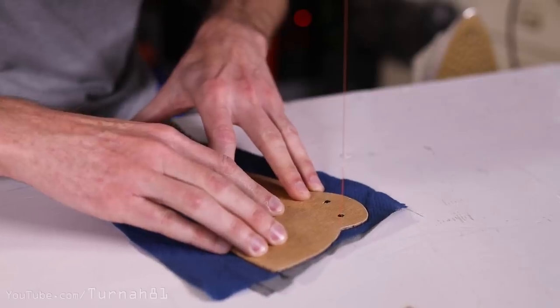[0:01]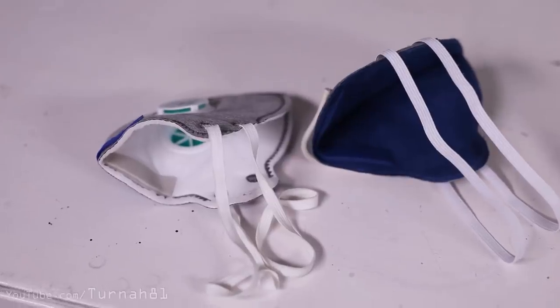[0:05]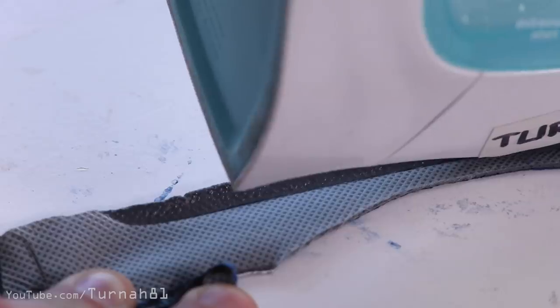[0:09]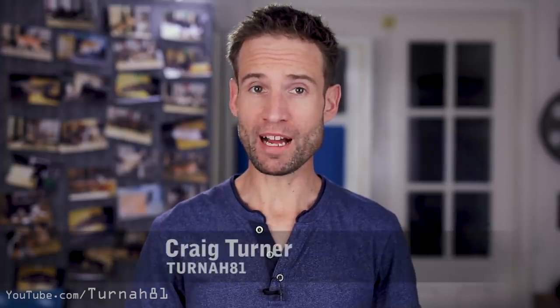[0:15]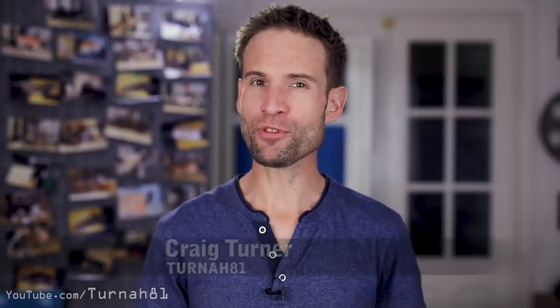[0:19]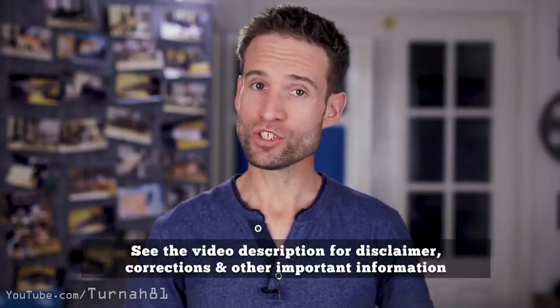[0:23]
In today's video, we're going to make a close equivalent to an N95 mask with very common household materials, without the need for sewing, vacuum cleaner bags, cotton, or wearing citrus fruit on your face. So, for my regular viewers, I've put some of my other planned videos on hold. This video is a little bit more serious, but I thought it was good information and wanted to get it out as quickly as possible. So less messing around than usual, maybe.
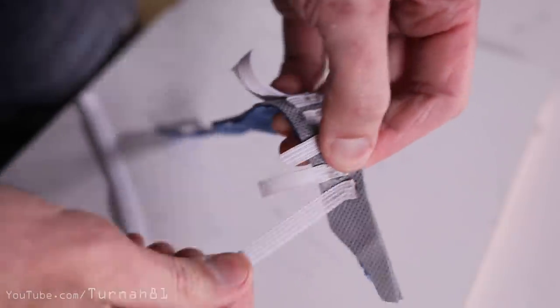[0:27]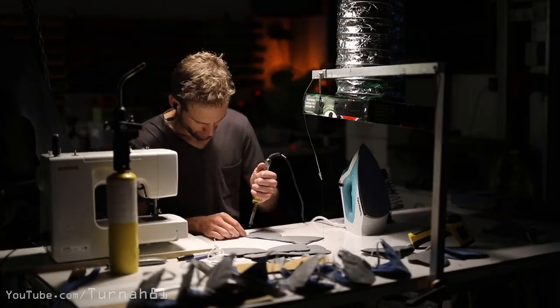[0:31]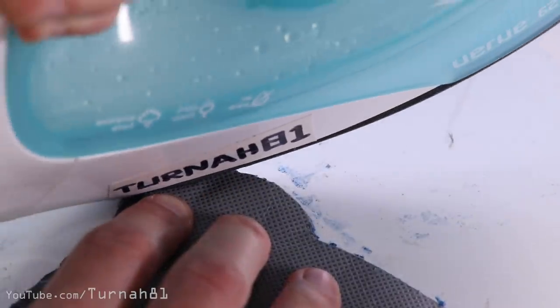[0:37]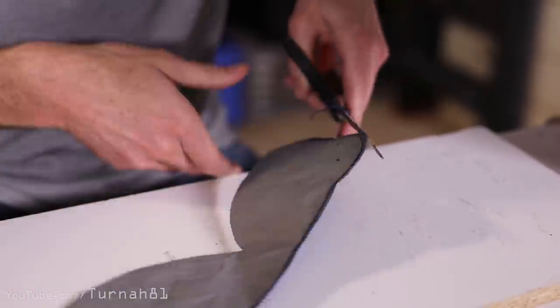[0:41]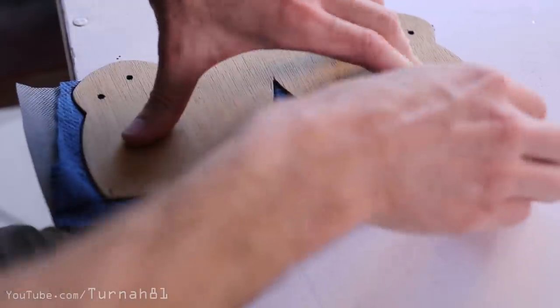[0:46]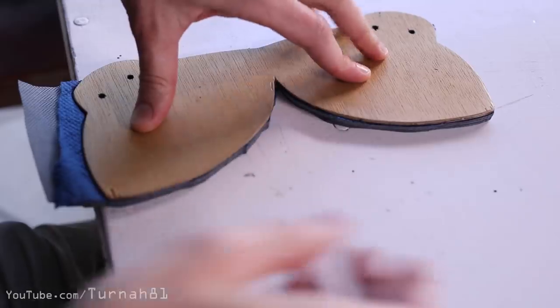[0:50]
Now, after 2 weeks and countless hours in the shed, plus many failed tests, I've finally worked out a pretty good recipe so anyone can make a close equivalent to an N95 mask, which at a minimum could be created with just an iron and a pair of scissors in about 10 minutes. But with a few extra tools, these can also be batch made quite quickly. Best of all is the materials you probably have in abundance in your home right now.
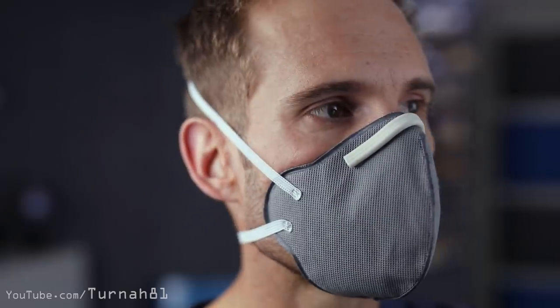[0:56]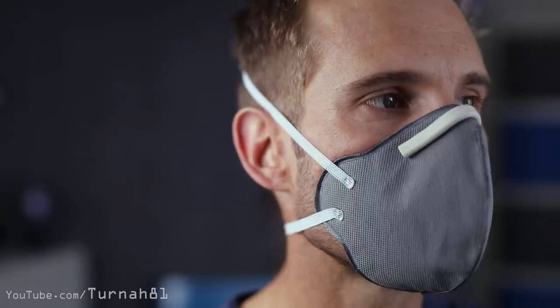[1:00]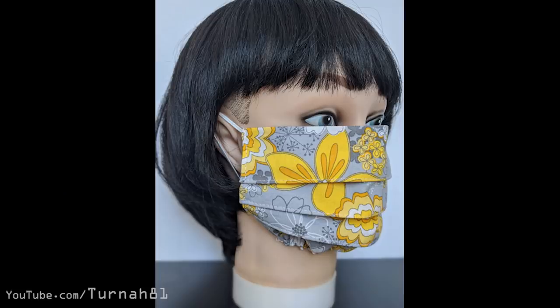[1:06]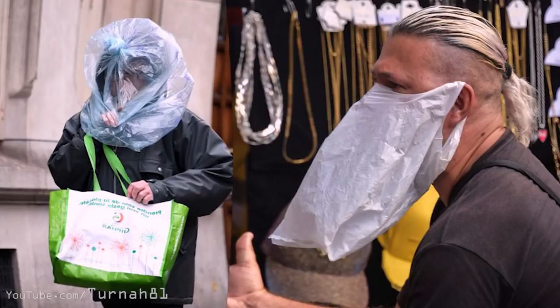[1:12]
Obviously, a proper tested N95 or P2 respirator is always the best choice, but if you can't get one, this could be a close match in filtration, great fitment, yet can be made easily. Personally, I would definitely wear this rather than a cotton mask with sewing holes in it and edge leaks, even over a surgical mask, but it's probably not as good as an airtight plastic bag on your head. Yeah, CO2 is going to make your problems fade away.
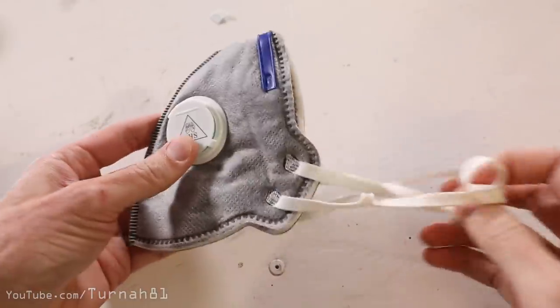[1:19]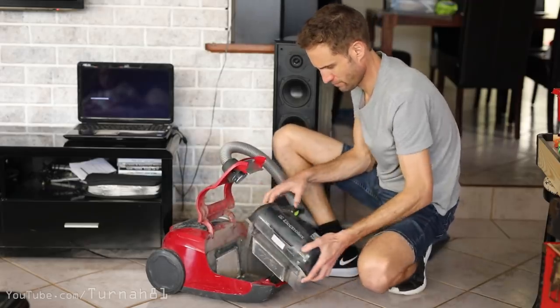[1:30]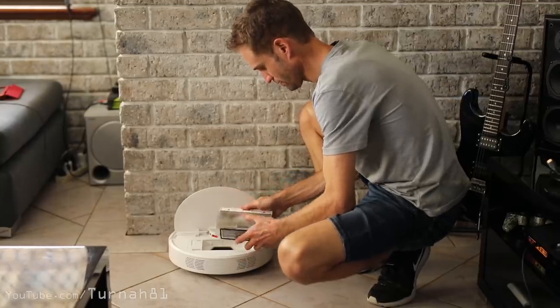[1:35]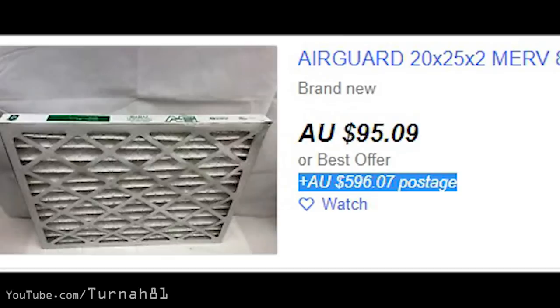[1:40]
Maybe like yourself, I did a bit of research early on as to what some good filtration alternatives are to N95 and P2 respirators. It seems that vacuum bags came up a lot. I went to investigate this option. However, it turns out in all three of our vacuum cleaner devices that it's not 1990. Then there's the furnace filter option, which was a bargain at $500 postage. But in all seriousness, these alternatives could be good ideas, but there's still the fundamental problem with these, which is supply. Even if they're accessible now, demand suddenly goes through the roof, and then they're just as hard to get as an actual N95 mask.
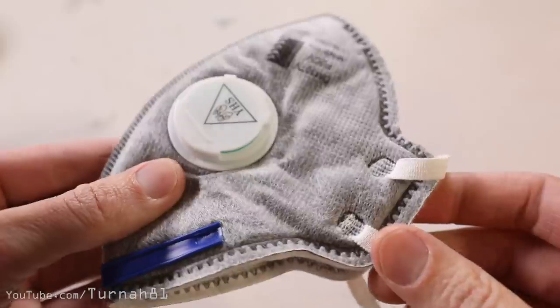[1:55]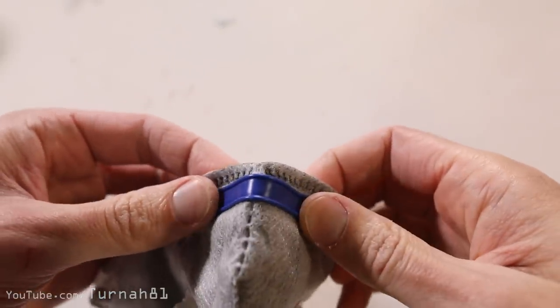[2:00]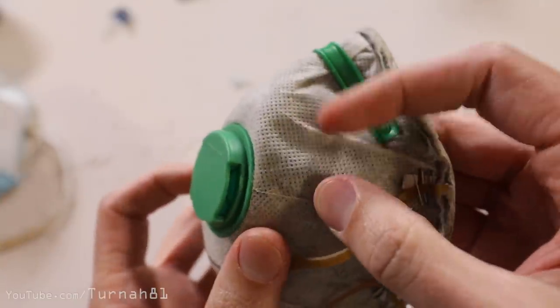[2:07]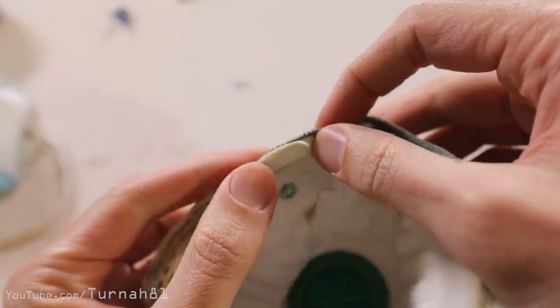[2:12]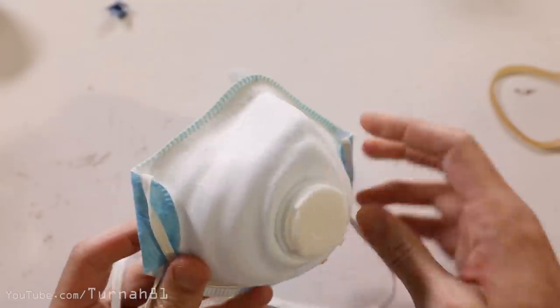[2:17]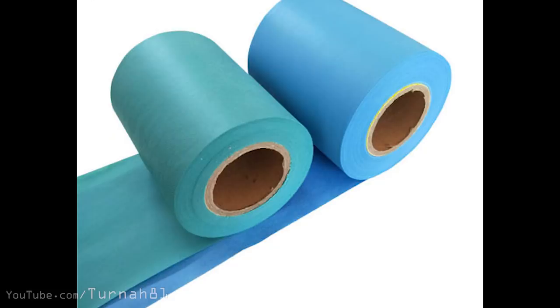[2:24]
I thought a good approach to this would be, rather than improvising a mask with alternative materials, maybe attempt to replicate one as close as possible while making the process accessible to everyone. So, my next move was to have a good look at an actual N95 mask. Luckily, I have a good variety of used ones knocking around in the shed. Looking at these and doing some research online, almost all masks are made from non-woven polypropylene, which has great air and water filtering properties. It's not a popular textile in the clothing industry, but the good news is it's extremely popular in almost everything else.
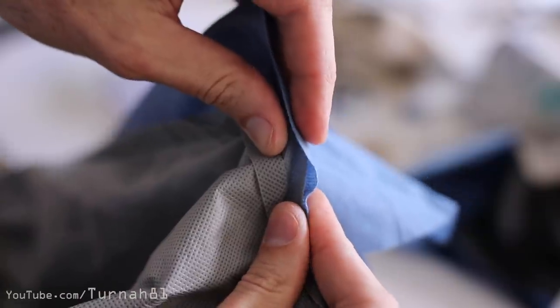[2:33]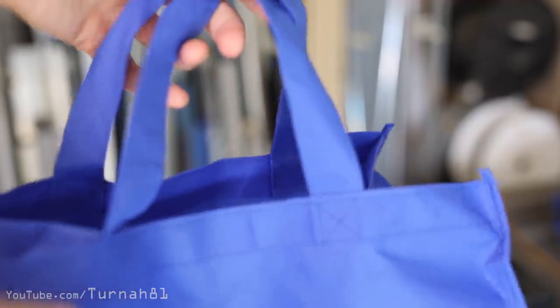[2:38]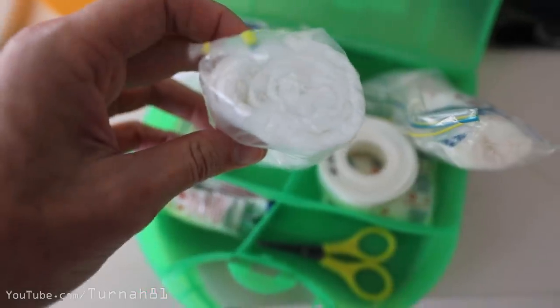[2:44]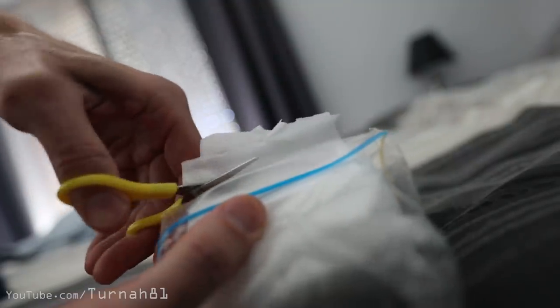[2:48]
It's pretty easily identifiable by the matrix of dots on it and can be found in varying thicknesses in everything from reusable shopping bags to cheap aprons, disposable painting overalls, suit covers, and I even managed to find some lightweight material in gauze in the first aid kit. So I grabbed a bunch of different samples.
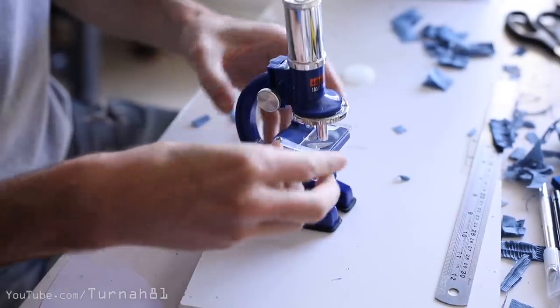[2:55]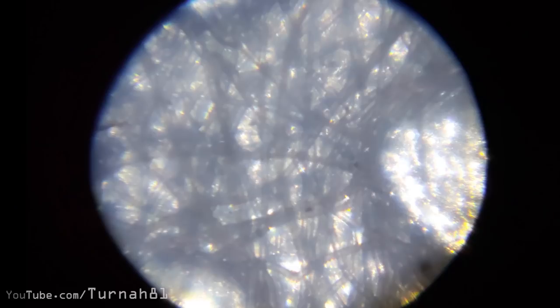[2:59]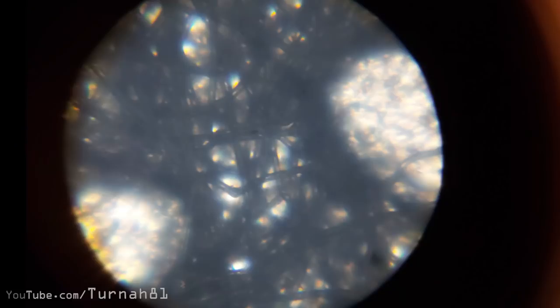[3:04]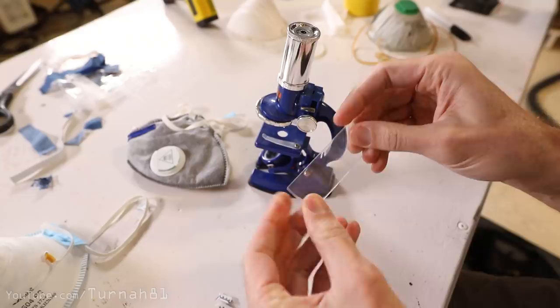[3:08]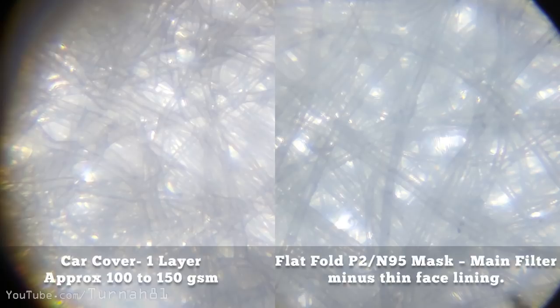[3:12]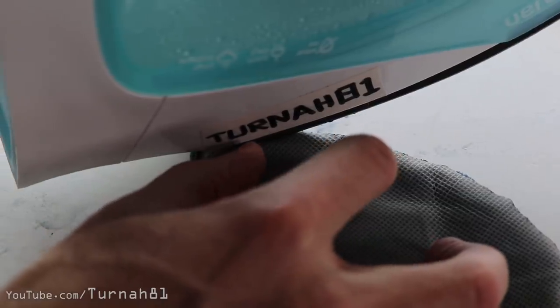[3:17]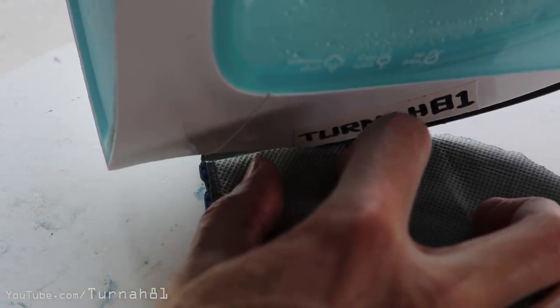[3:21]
First, I was concerned the dots themselves may be a passage for air, but in checking it out on my son's $10 microscope, surprisingly, I was able to get a really good idea of the structure. Sorry, these shots aren't the best and just taken on my phone, but it turns out the dots are pressed and sealed, making them look translucent. I then dissected the layers of the masks I had on hand, and comparing the masks to the non-woven material, it appears to have the exact same fiber size, even with similar air gaps on some. But the other aspect that makes this material really great for this purpose is that it can be plastic welded, so there are no stitch holes.
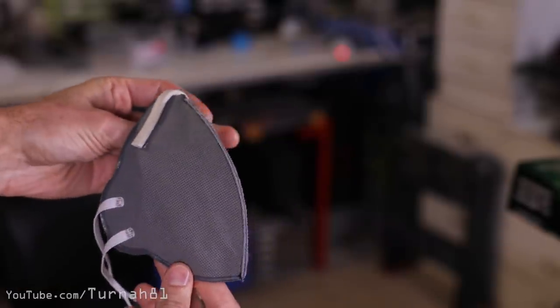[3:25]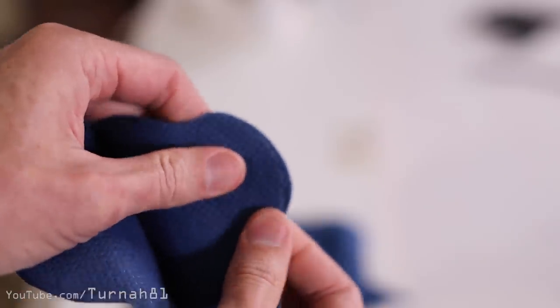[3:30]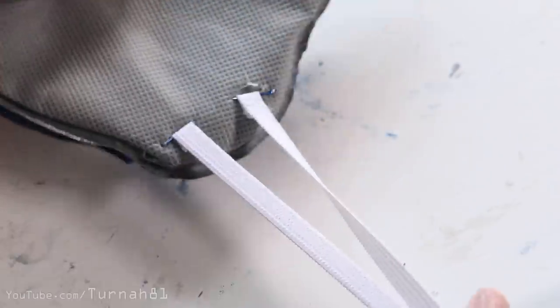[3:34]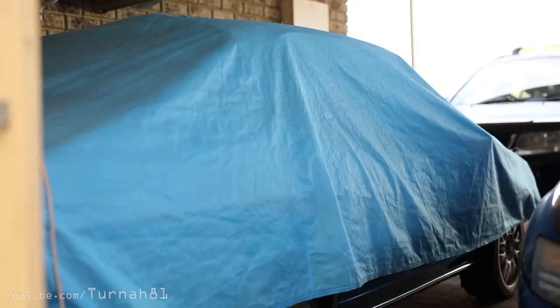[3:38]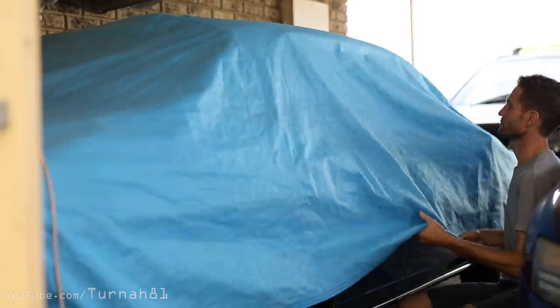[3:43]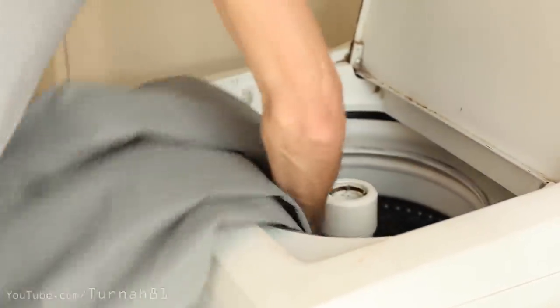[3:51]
So what we'll be doing is making a flat fold style mask using multiple layers of material to get a nice deep diffusion. With a few refinements I've done to allow different elastic strap options, as well as some changes to the shape so you don't look like a duck. The largest, most economical source of material I found in the house was my car cover, but if you're familiar with my other videos, you'll know that this is soaked in cat piss, so I picked up a new one from the shop. Now the first thing is to wash and disinfect our material.
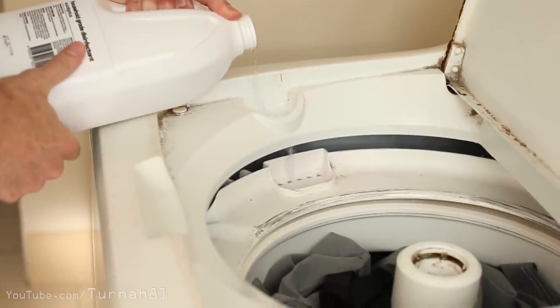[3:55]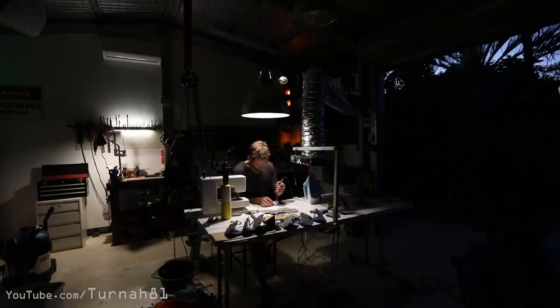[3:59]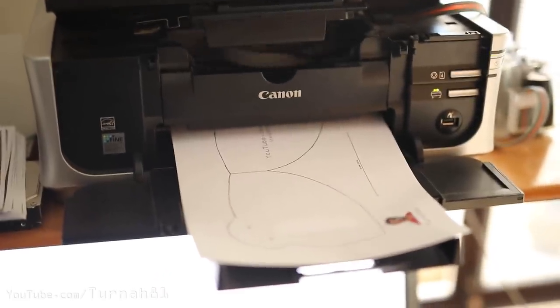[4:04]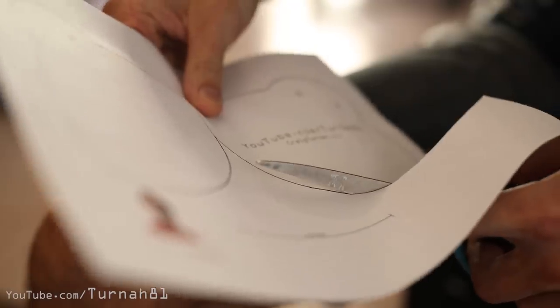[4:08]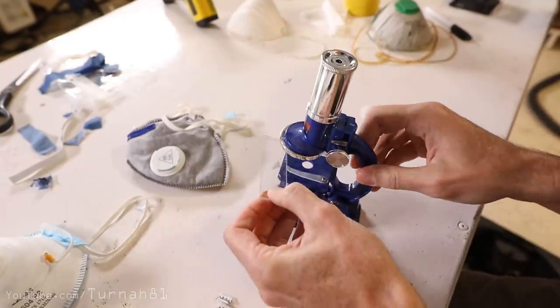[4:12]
As a note though, if you're making masks for other people, unlike what you might see in this video, the whole process will have to be hygienic, and obviously don't make masks for others if you're sick. Now, you're going to want to print out the template. I've put this on my website, and I've put a link in the description. I've done a lot of experimenting with different layers and combinations of different densities.
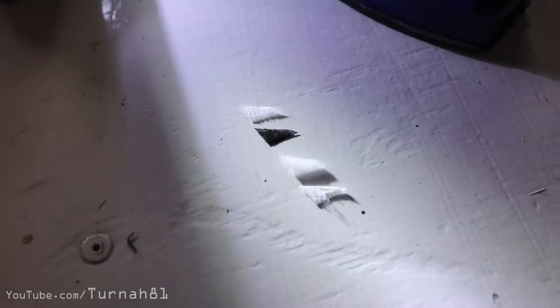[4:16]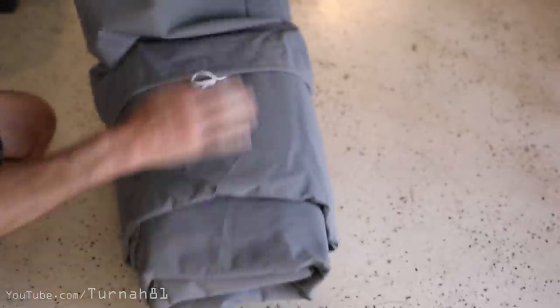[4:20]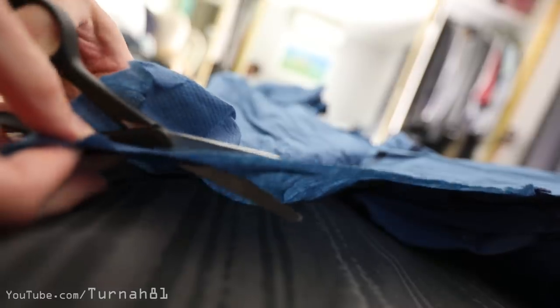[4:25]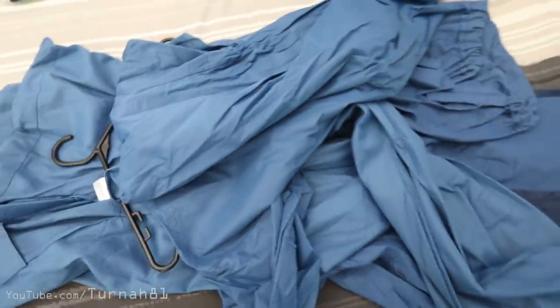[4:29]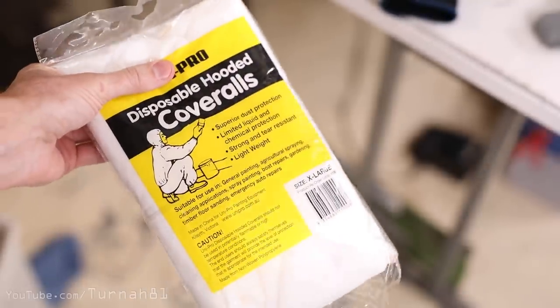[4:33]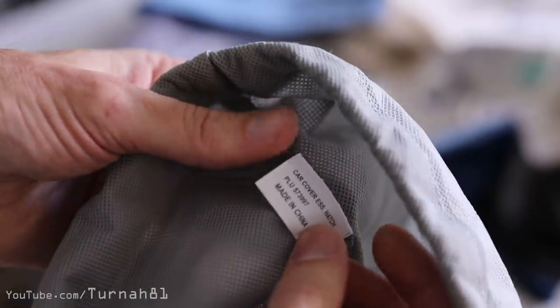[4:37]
Of the non-woven polypropylene I had on hand, I found it was best to use 3 to 4 layers of the car cover, which is around 100 GSM per layer, and then one layer of a surgical gown, which is about 50 GSM. I get that surgical gowns aren't easily available, but they are a similar weight to disposable painting overalls. As a loose guide, based on my research, car covers are about 100 to 150 grams per square meter,
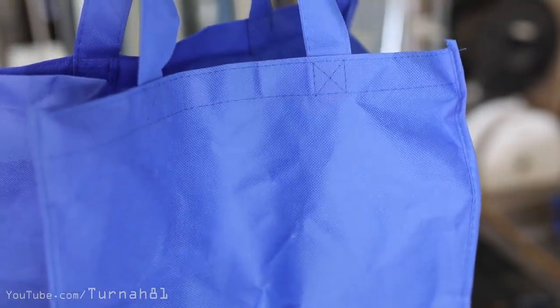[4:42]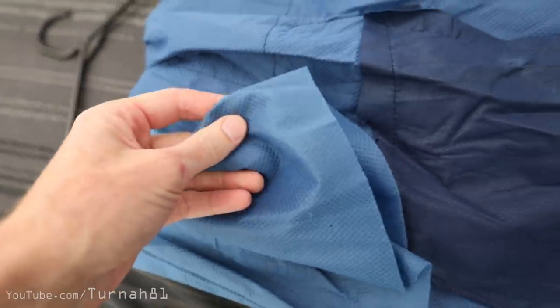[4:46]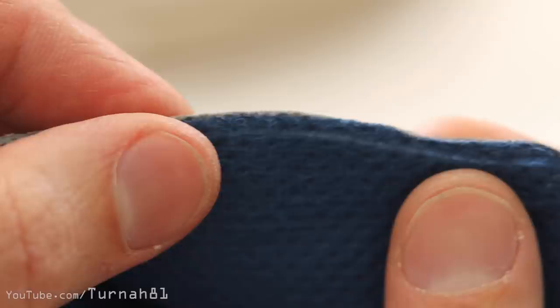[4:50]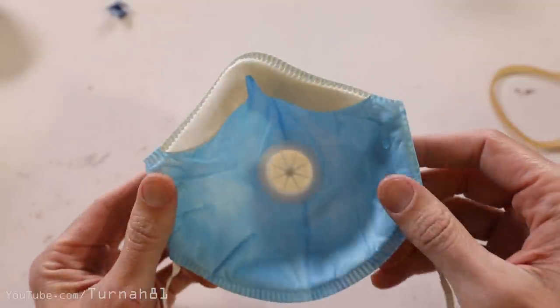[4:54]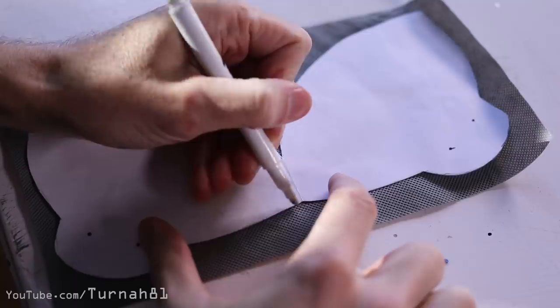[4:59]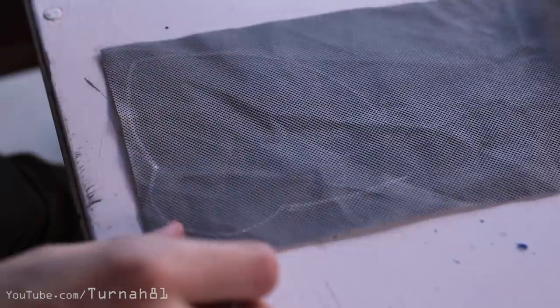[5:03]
shopping bags are 80 to 100 GSM, disposable painting overalls and surgical gowns are a bit lighter at about 30 to 50 GSM. I'm going for a lighter layer to go against your face, which is more comfortable but not totally necessary. However, it probably does provide a better seal against your face. So if you're just making the one mask, you can use a template to trace it onto each of the layers and then cut them out with scissors.
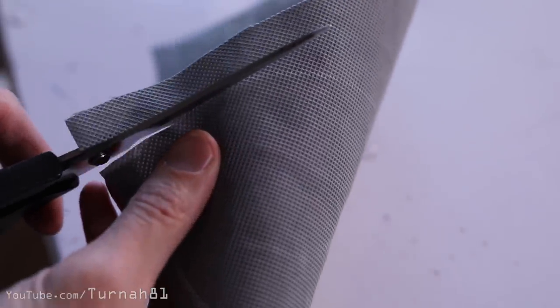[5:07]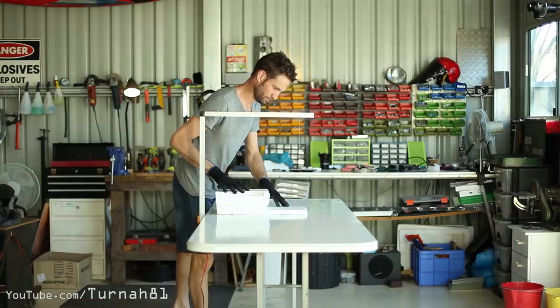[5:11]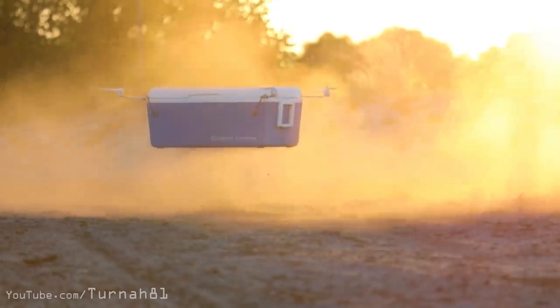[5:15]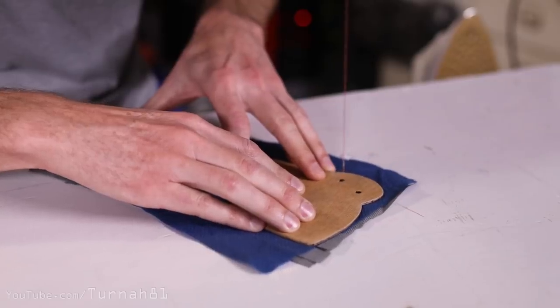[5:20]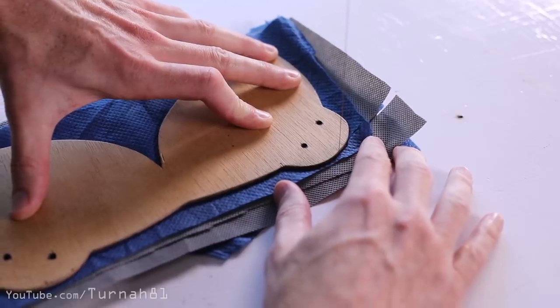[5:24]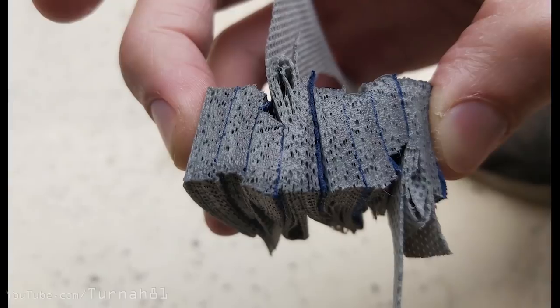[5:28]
I was trying to work out a way to cut more masks at a time to make it more time efficient, and if you remember the hot wire foam cutter that I made to cut material for the cooler drone video, I set this up to see if it would work, and it turns out it does an absolutely amazing job at cutting this stuff. And it's fun. Experimenting with how many layers I could do at once, I pretty much got to the limit of how many I could stack in a pile.
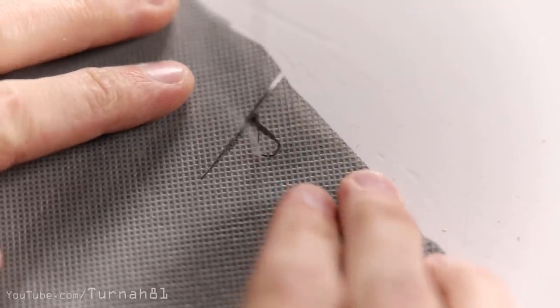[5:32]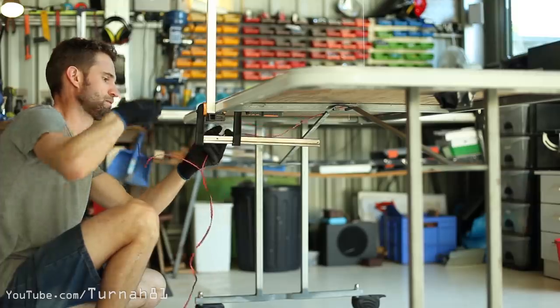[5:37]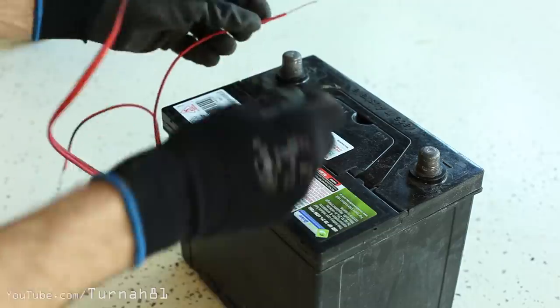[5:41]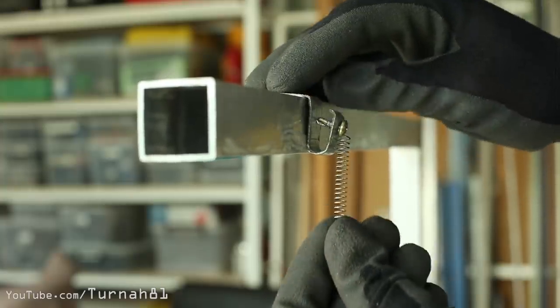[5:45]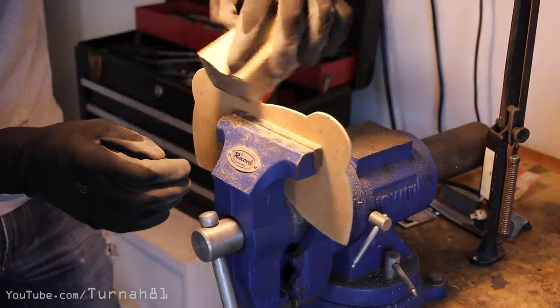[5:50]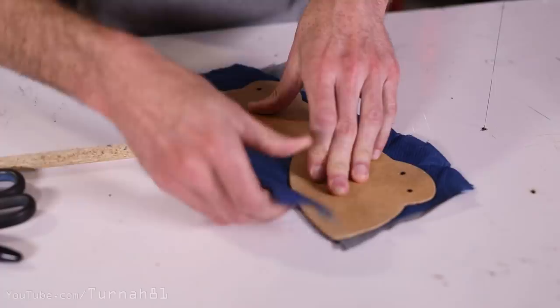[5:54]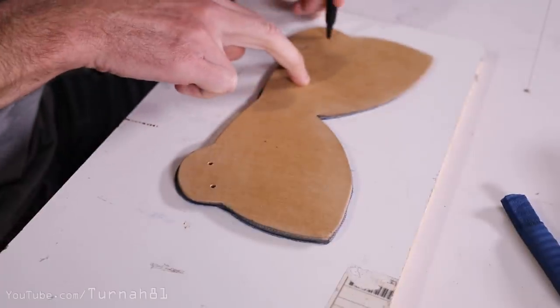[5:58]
So if you're looking at cutting lots of masks, or even just want to have fun with it, it's definitely worth making one. I've actually made another video on how to build one like this. It costs about $30 in parts, plus an old car battery and table, and about 30 minutes to put together. Additionally, to make it easier to cut more in the future, I traced and then cut out a wood template so I can run the hot wire along its edge. After you've cut the basic mask shape, use your template to also mark the elastic holes in the top layer.
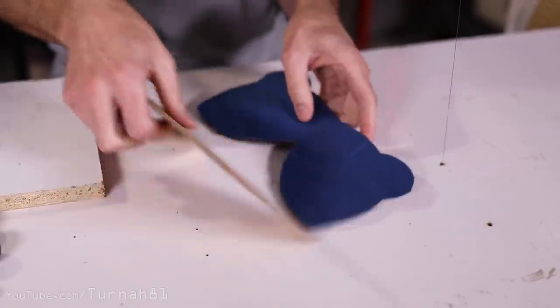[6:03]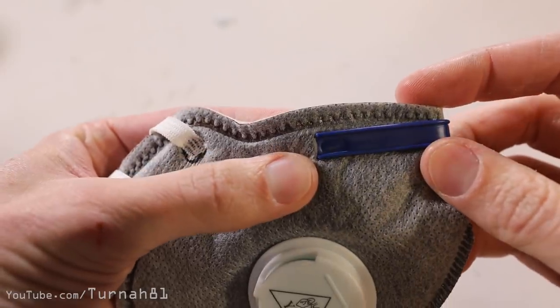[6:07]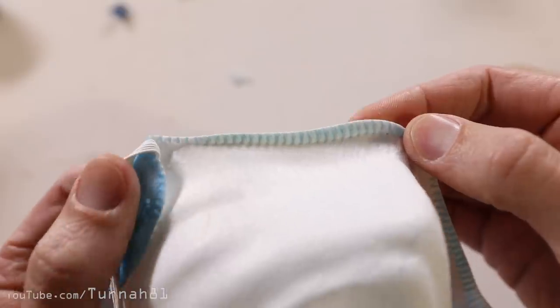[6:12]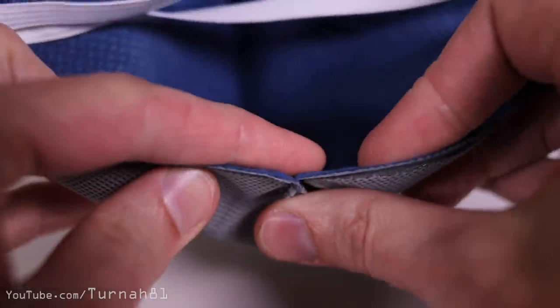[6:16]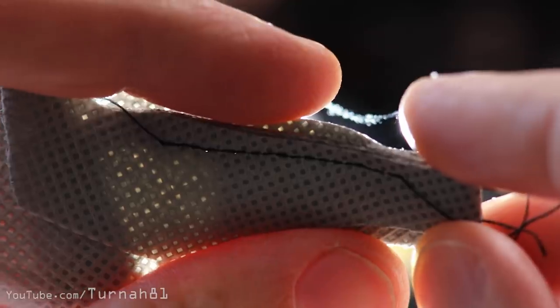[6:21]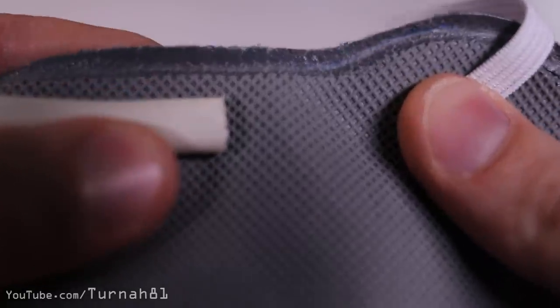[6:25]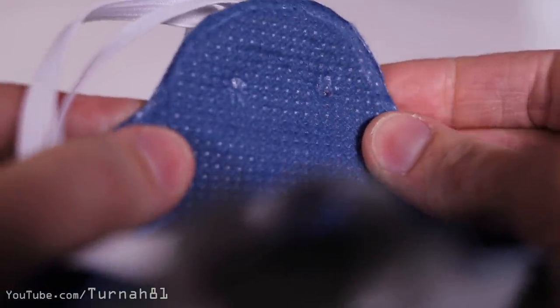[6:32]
Now we are going to weld together all of these filter elements around the edge. Proper N95 masks are made using an ultrasonic welder. None of us have that, obviously, so I managed to work out a technique with an iron. When done right, this is beneficial over sewing, partly because you don't need a sewing machine, but also because sewing introduces perforations to the material, which can leak air. Also because when dealing with this many filter elements, it's important to seal around the edges thoroughly so air travels through every filter element and doesn't take a shortcut through the edges and the seams.
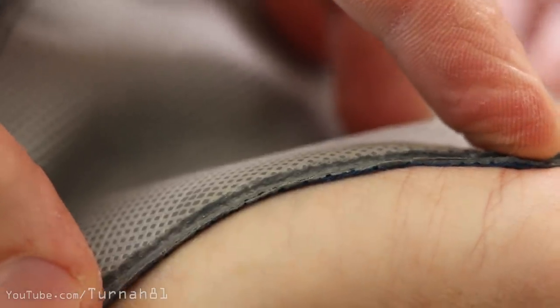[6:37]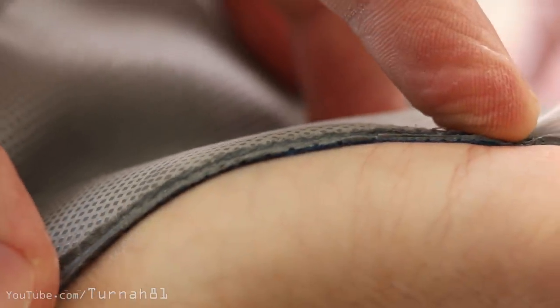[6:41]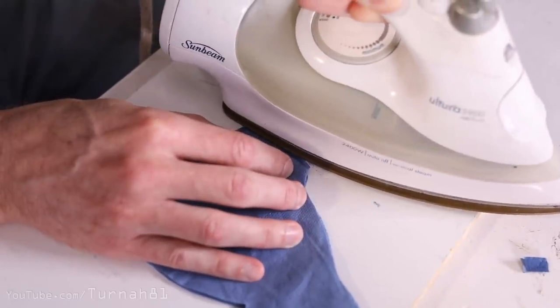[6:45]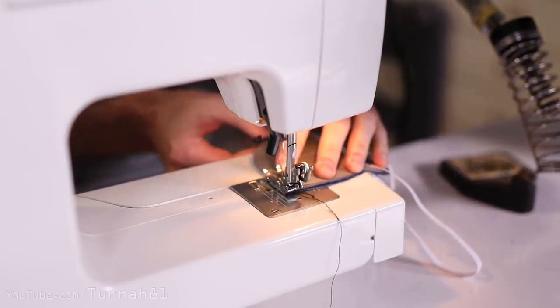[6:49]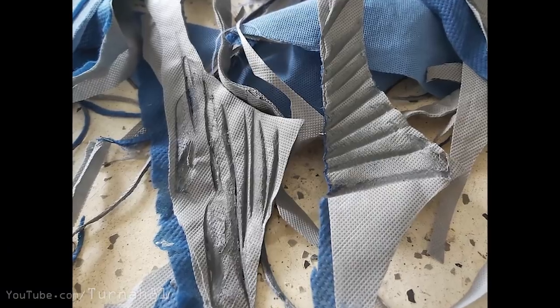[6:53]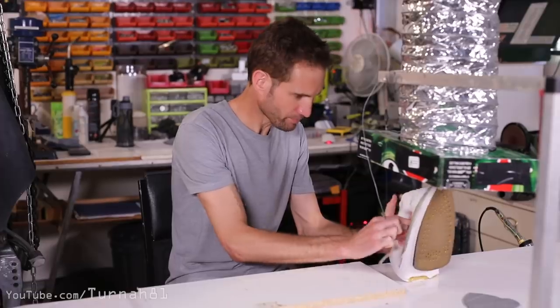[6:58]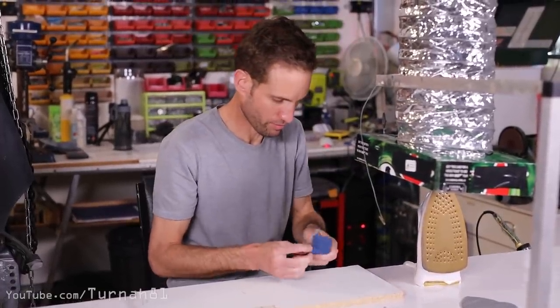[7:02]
Plus, doing it this way seals it nice and flat against your face without any little bits of cotton stitches messing stuff up. Having said that though, if you do have trouble with this next part of the process, you can sew it and you'll still end up with a better mask than if you're using woven material like cotton. I tried so many techniques to get this to work, I almost gave up a few times. I'm not gonna lie, it's not the easiest to learn, but once you nail it, it works awesome.
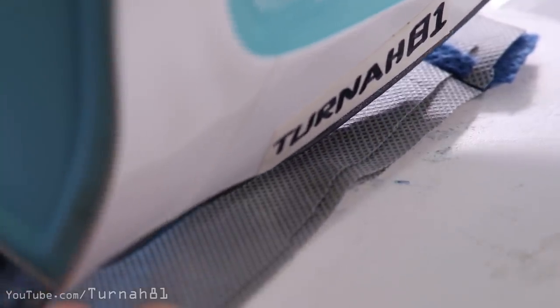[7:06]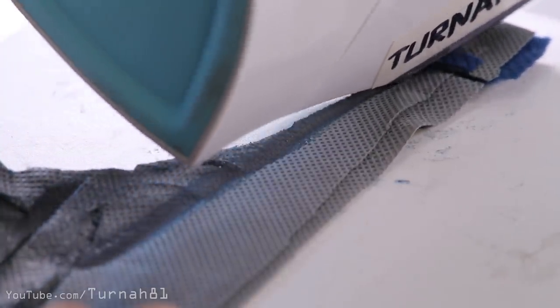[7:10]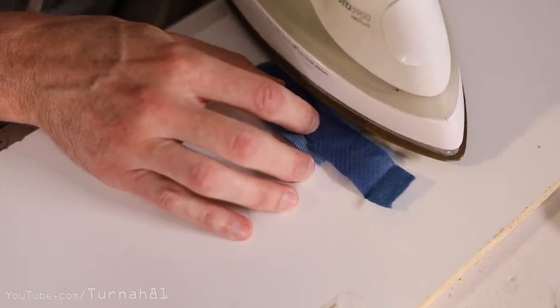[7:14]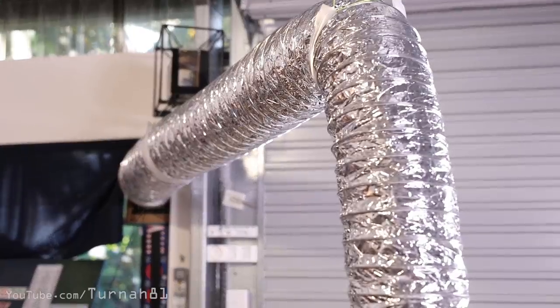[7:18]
Before doing it on a mask, get pieces of scrap material stacked in the same way as your mask and do a bunch of test runs with your iron. Just before you do that though, this can produce a fair few plastic fumes, which you probably don't want to be breathing, so do it in a well ventilated space.
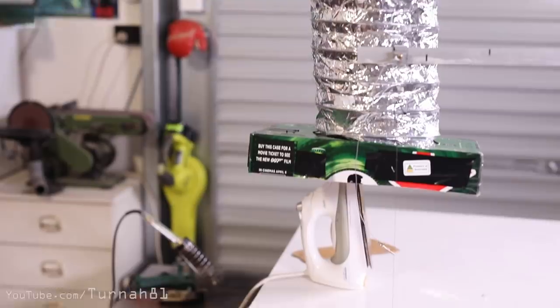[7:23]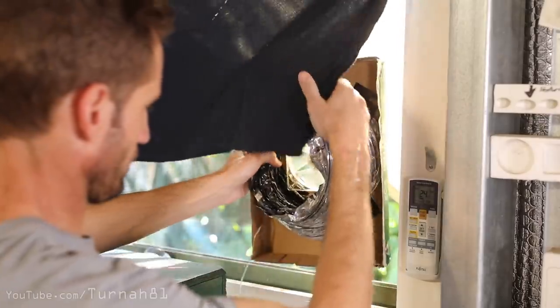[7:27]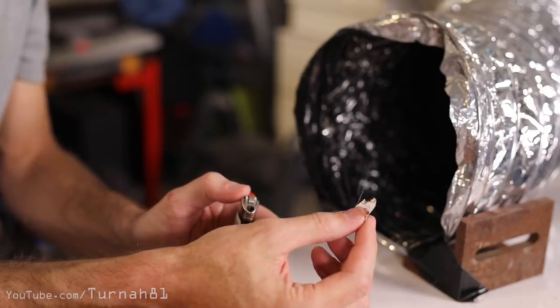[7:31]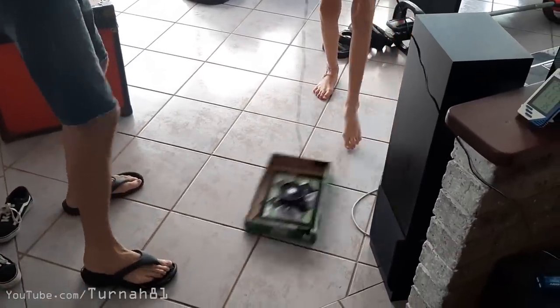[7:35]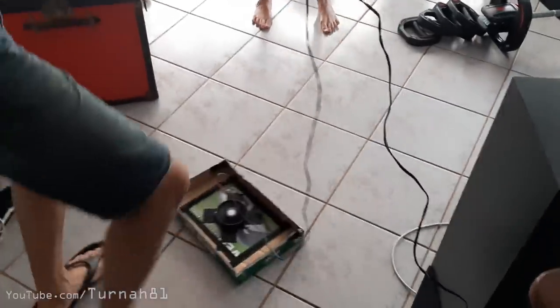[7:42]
I ended up whipping up this quick fume extractor arm out of a beer carton, an old computer fan, and this silver tube that I've had in storage for years that I bought for some reason and I can't remember why. But it worked a treat, and it turns out I also accidentally made a hovercraft. I got a bit distracted playing with this for a bit with the kids. Yeah, good times on the hover soccer field. Anyway, back to the task at hand.
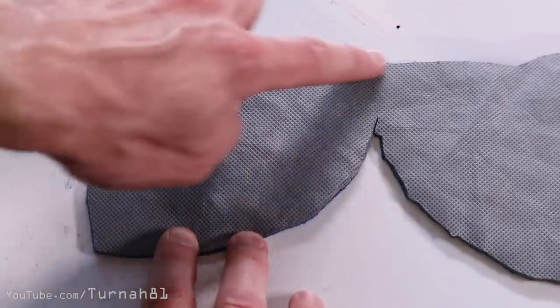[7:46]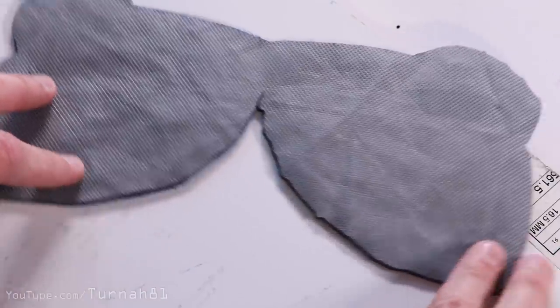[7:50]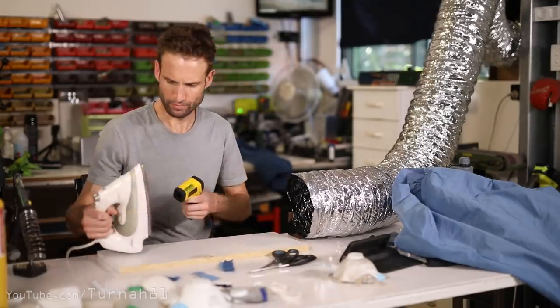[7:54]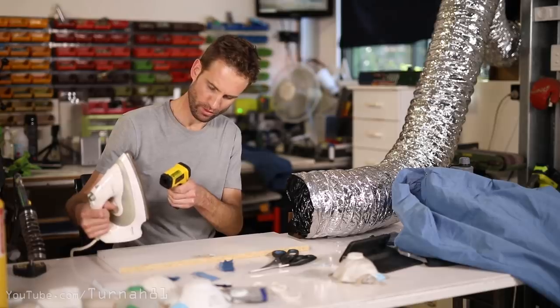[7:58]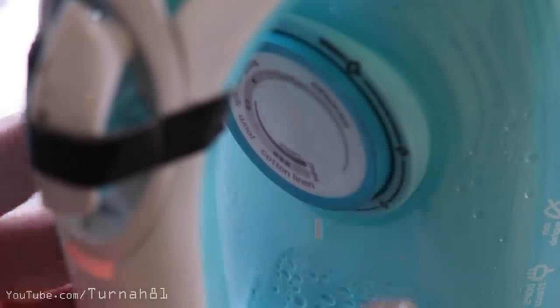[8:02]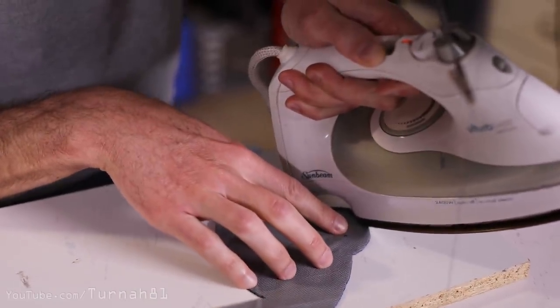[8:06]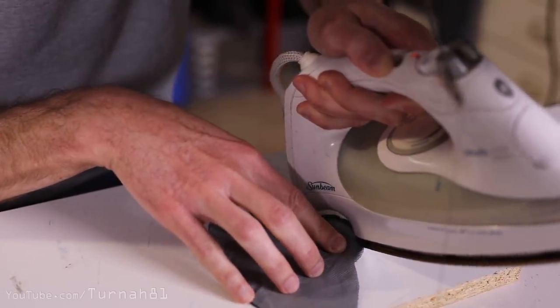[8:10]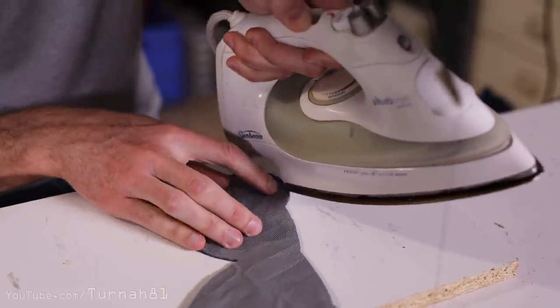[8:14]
To begin with, we're just going to weld the outer edge of the mask, leaving the front seam for now, which is the V shape. To do this, you want to get your iron to about 180 degrees on the back corner, if you can measure it. Your iron will probably differ from mine, but the two I tested, this setting was about maximum heat or slightly under. With the front of your mask facing up, use the back corner of your iron, holding it at about a 30 degree angle, with the bottom of the iron facing the outer edge of the mask.
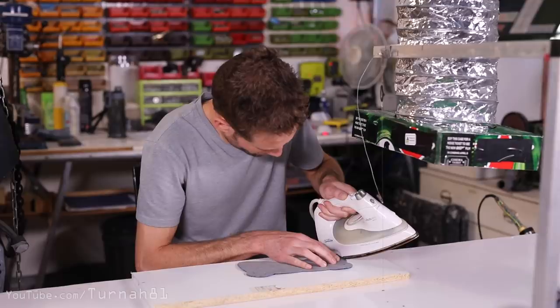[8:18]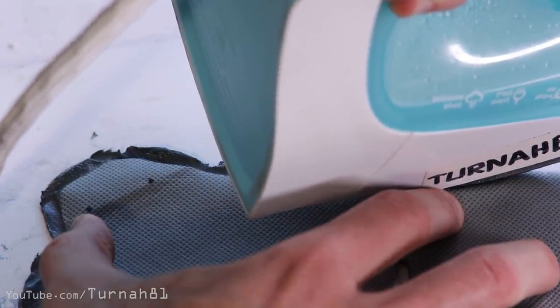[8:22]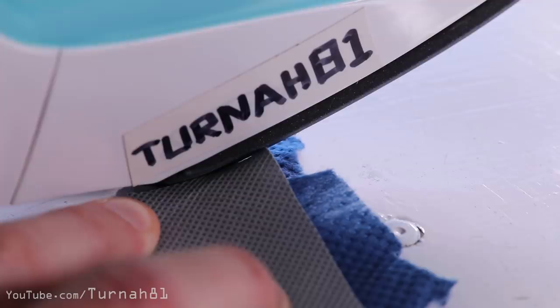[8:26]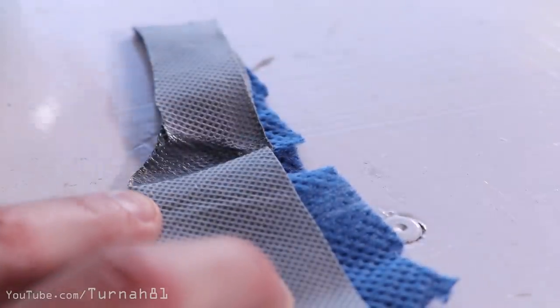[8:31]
Then, with a fair bit of downward pressure, you can slowly advance forward around the edge of the mask, aiming about 5 millimeters in from the edge. Make sure you do a bunch of test runs until you find the right combination of temperature, speed, and downward pressure.
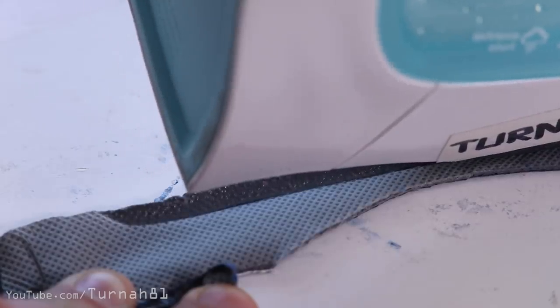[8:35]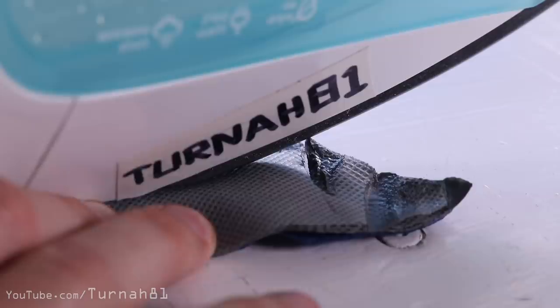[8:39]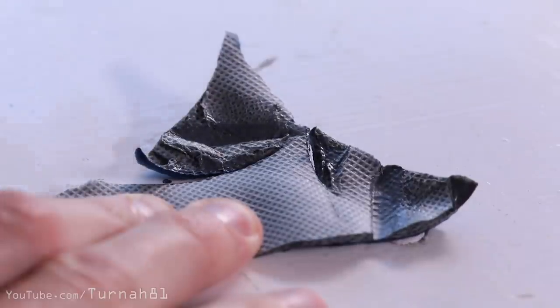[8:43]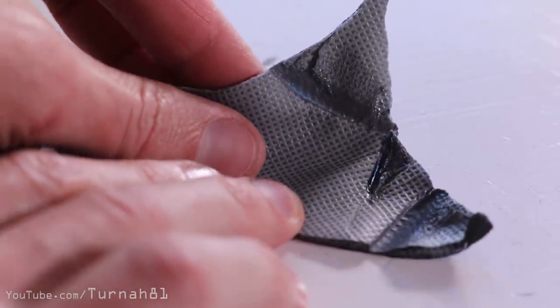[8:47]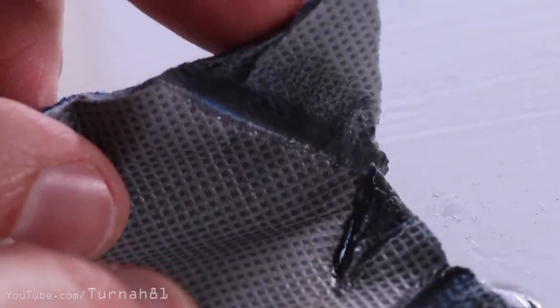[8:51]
It's tempting to hold the iron flat, but it simply doesn't work to bond through all the layers. If your iron leaves a trail that's cut all the way through the layers, the iron's too hot or you're going too slow. If yours is like mine, with your bottom layer being a different color, this is actually helpful because you can see it start to be revealed as you move the iron around.
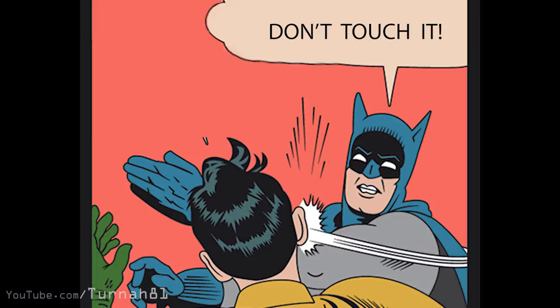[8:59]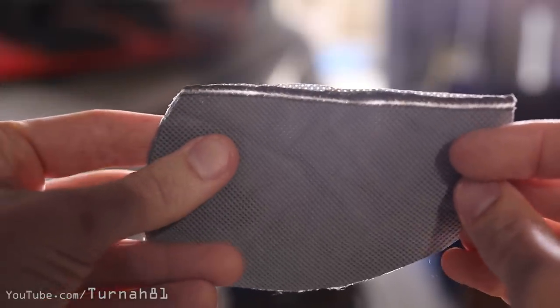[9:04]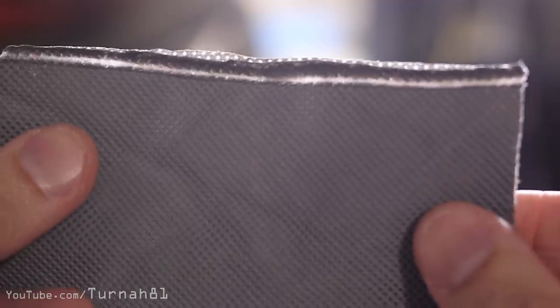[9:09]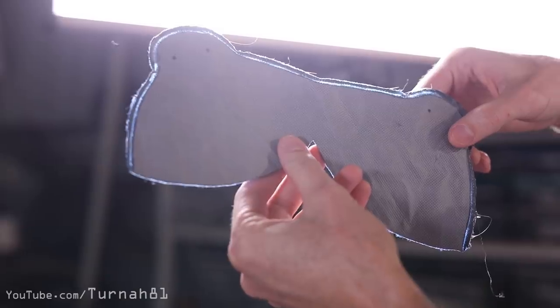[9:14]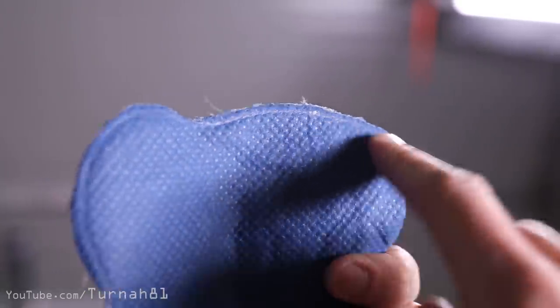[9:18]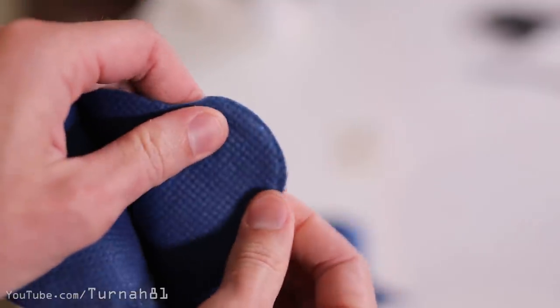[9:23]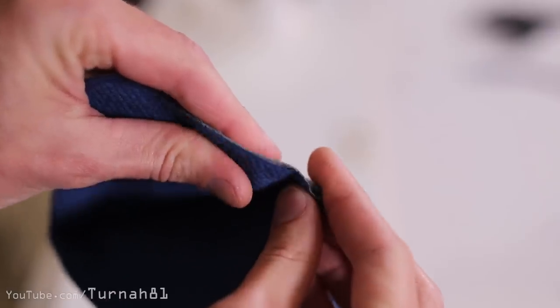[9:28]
When you're done, let the weld cool down for a bit before messing with it, otherwise you're gonna ruin the join. Don't touch it! The best way to see if you've been successful with your join is that you haven't contracted a virus. No, the best way to see if you've been successful or not is to hold it up against a bright light and you should see a translucent line around the entire edge. Then looking on the other side of your mask, you should see a shiny depression around the inside edge of the mask. You can use your thumb to push the inner lining around to make sure it's bonded all the way through. If it hasn't worked, you're f***ed.
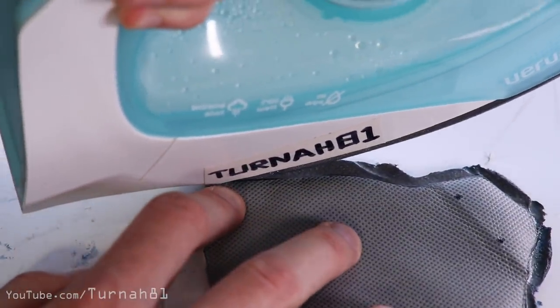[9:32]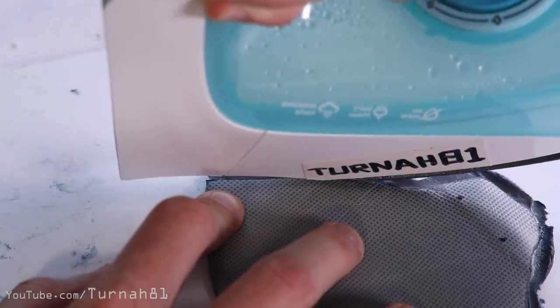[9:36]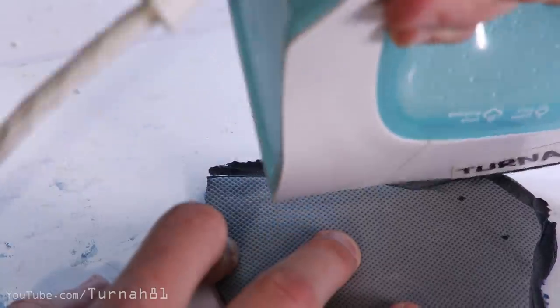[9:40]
No, if it hasn't worked, you can run the iron over it again an additional time. However, you only get a couple of lives doing this because the plastic starts to break down with heat. By the third or fourth time, even if you get it to join, it will start to get more brittle and is more likely to fail later on.
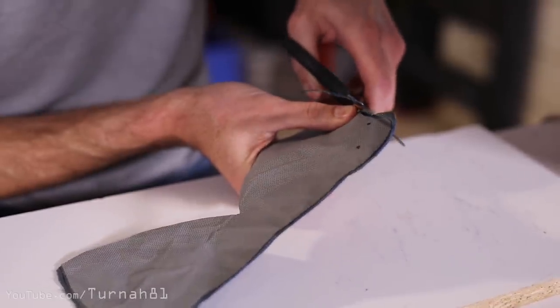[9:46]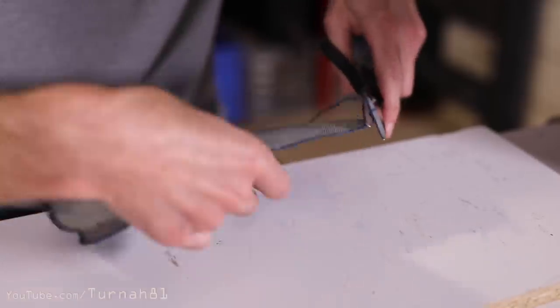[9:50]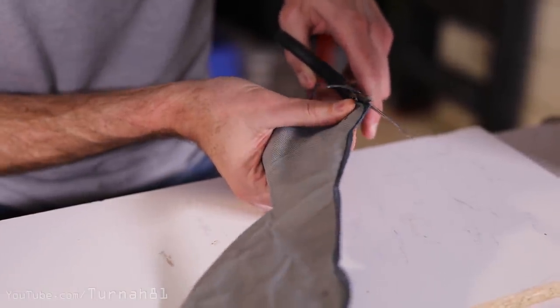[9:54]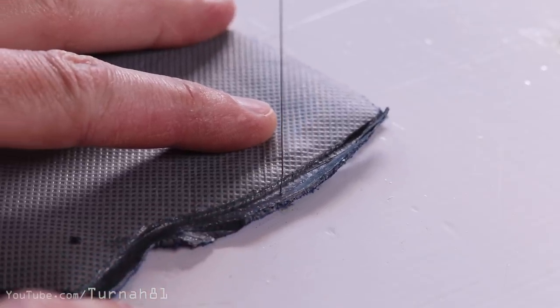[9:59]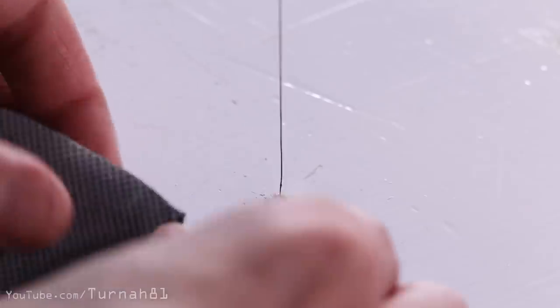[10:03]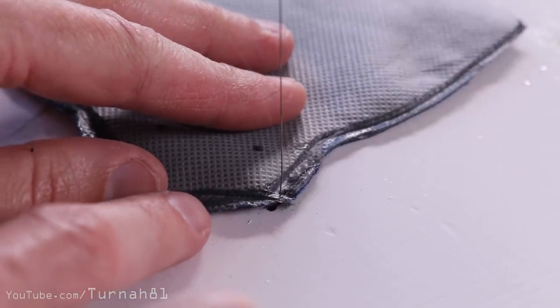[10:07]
Now, if you've got a really good bond all the way through to your back layer, you can use a pair of scissors to trim the jagged edge of the plastic. Don't trim too close to your weld line though, leave as much border as possible. I've had some pretty good luck trimming with the hot wire as well. It doesn't look as good and it can produce some little sharp bits that need to be trimmed off, but it is a bit of extra backup to stick all the layers together.
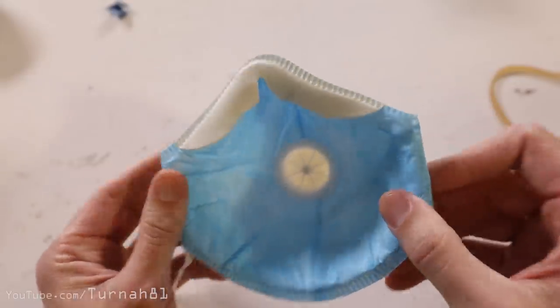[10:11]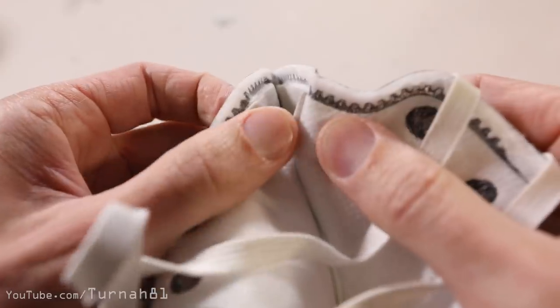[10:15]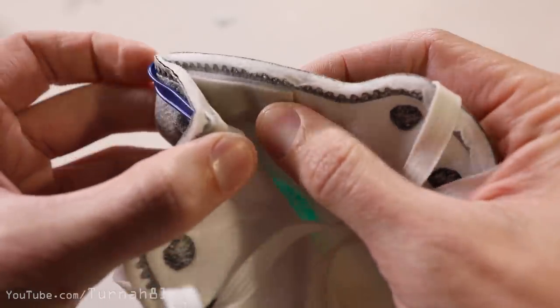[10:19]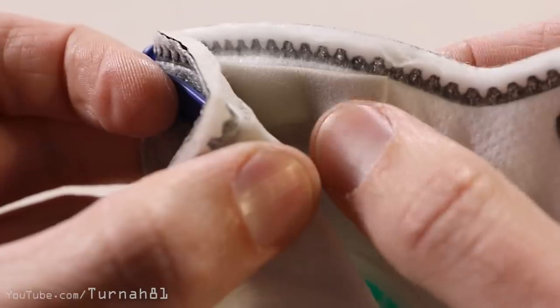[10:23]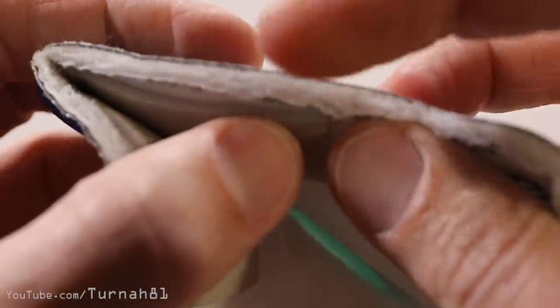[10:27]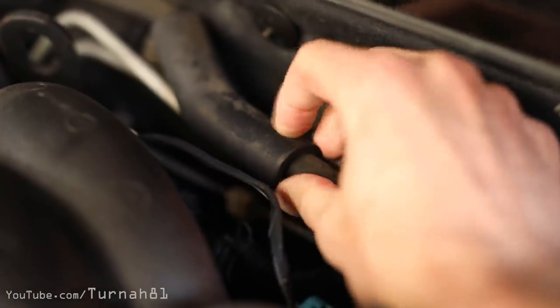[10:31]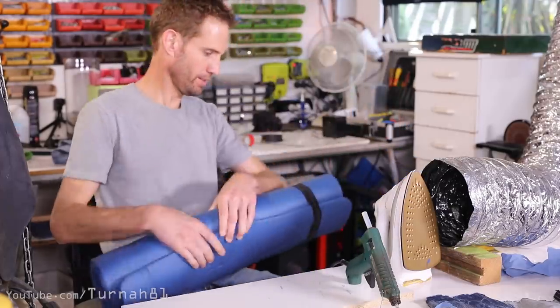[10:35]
We can move on to doing the nose seal rubber. This part is really important to create a nice airtight seal on your face. Looking at existing N95 masks, they appear to use a very low density foam rubber, which is about 2 millimeters thick. It looks like they use either NBR foam or very soft EVA foam. The only NBR foam I had on hand in a similar density was in the engine bay of my car and this really soft exercise mat.
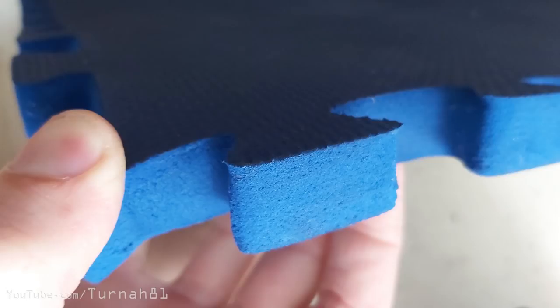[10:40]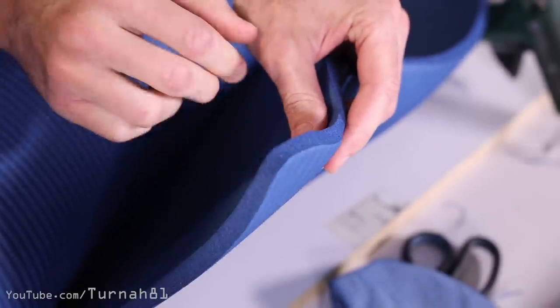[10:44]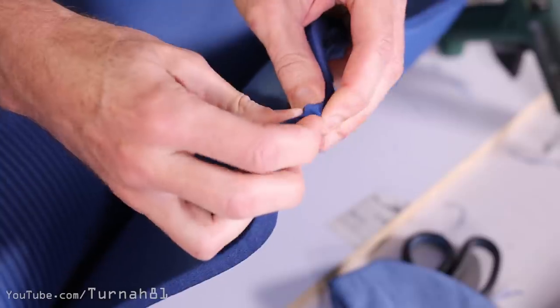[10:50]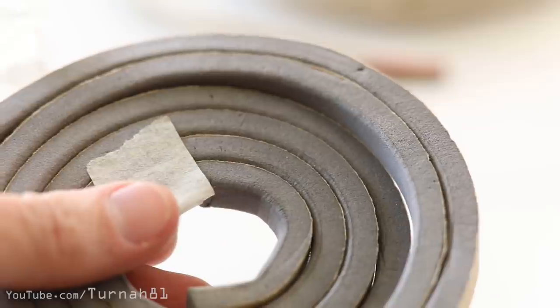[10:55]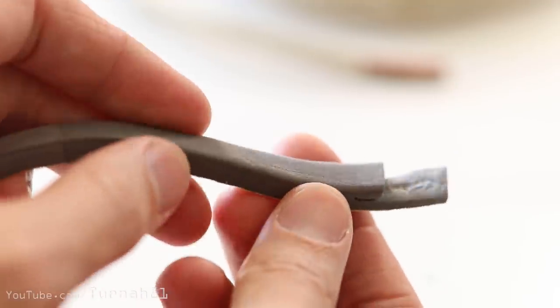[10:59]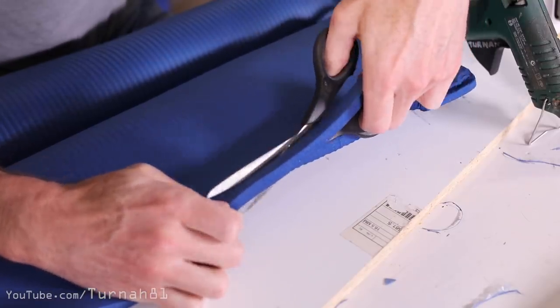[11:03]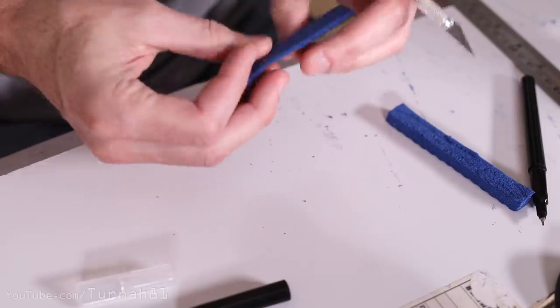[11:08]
You have to be careful though, because mats like this are often higher density EVA foam also, which isn't soft enough to contour to your skin properly. Whatever you do use though, it has to be closed cell so it doesn't let any air leak through. As a rough guide, it should feel as soft as your skin when pressed. Overall though, if you find some foam that has an adhesive backing and is 2 millimeters thick, you're winning. I had to use the NBR foam exercise mat, which has the perfect feel, but has to be sliced into thin strips, which was a pain.
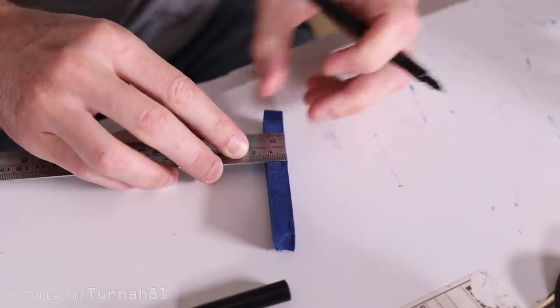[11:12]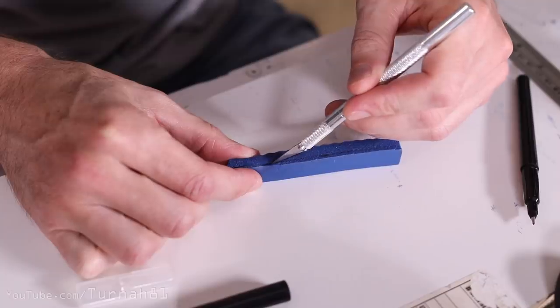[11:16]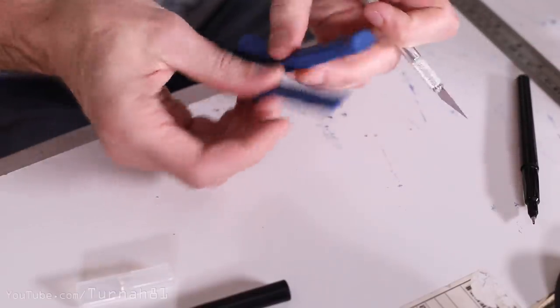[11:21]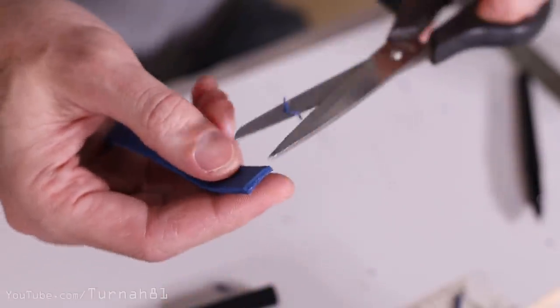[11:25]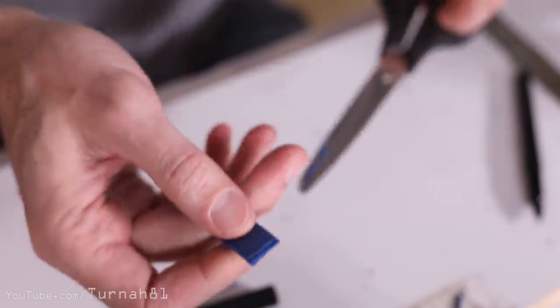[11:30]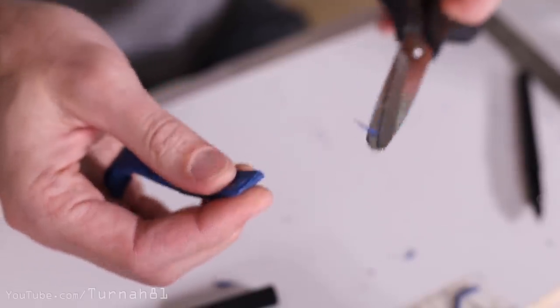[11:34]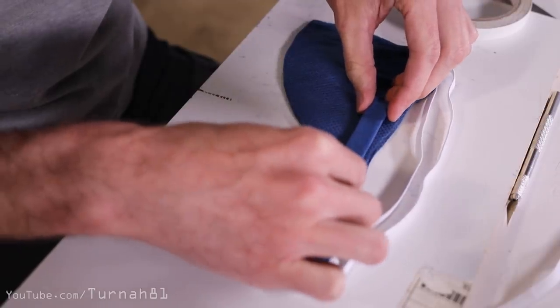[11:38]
So depending on what you have on hand, you need a strip that's 2 millimeters thick by 100 millimeters long and about 15 millimeters wide. You'll also need some double-sided tape to match the width, then stick this onto the back of your strip of foam. As a little improvement over the N95 mask, I've also cut little 45 degree beveled edges on each end of the foam strip. This allows it to sit flatter on your face without little air gaps. Okay, you can now stick this strip across the top inside of your mask and press it down firmly.
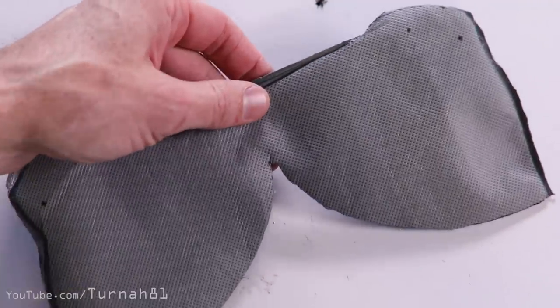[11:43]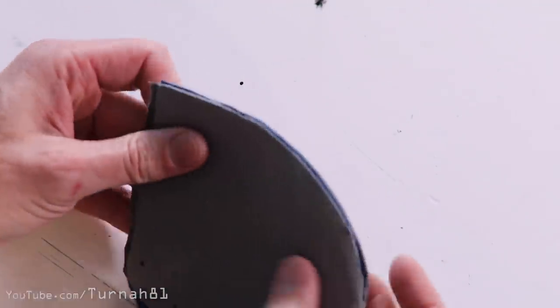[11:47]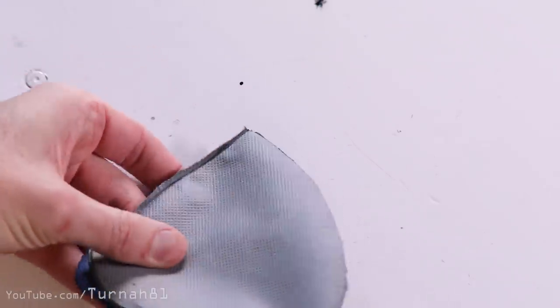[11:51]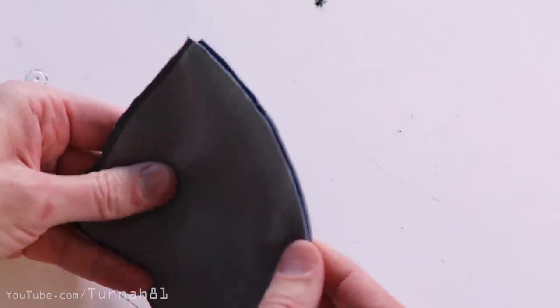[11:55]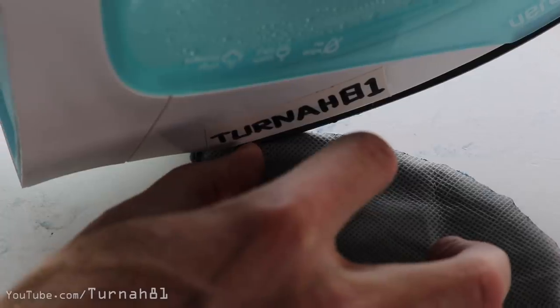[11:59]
With that complete, it's now time to do the front seam. This one is a bit tricky because we're using so many filter layers, so this seam will have 8 to 10 layers of material that you'll need to join together. At the time of recording this, I'm still a bit on the fence about the best way to do it, but I'll give you some options.
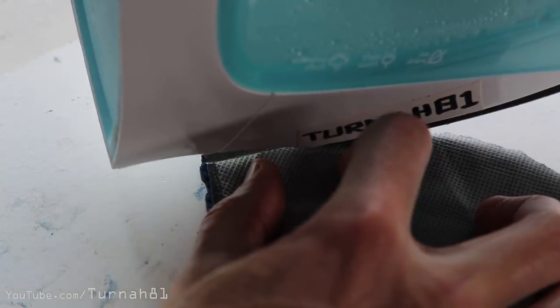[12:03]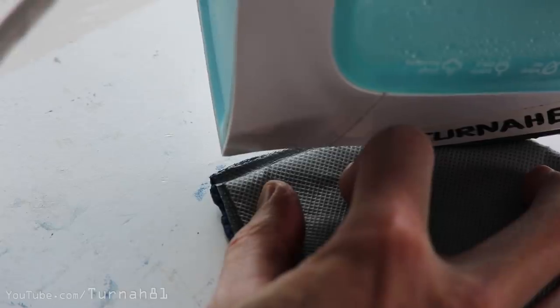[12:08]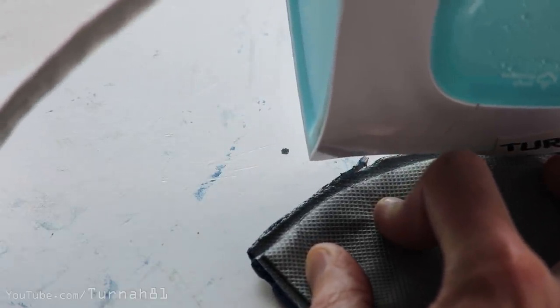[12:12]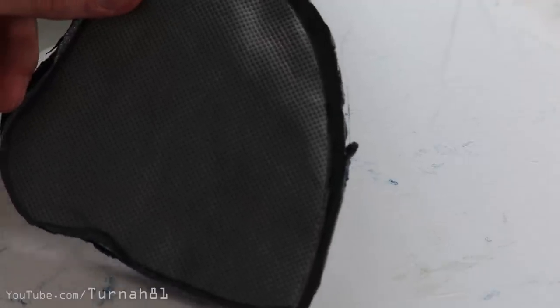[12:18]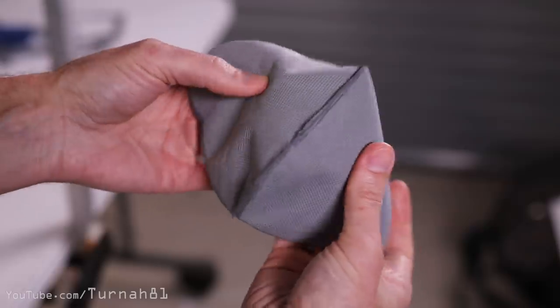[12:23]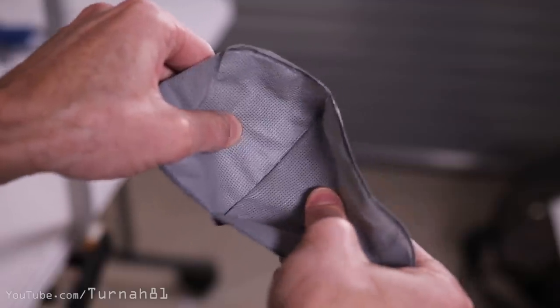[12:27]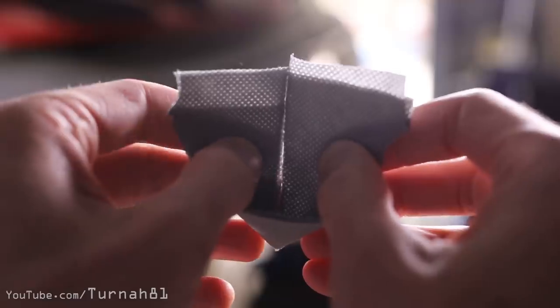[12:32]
Okay, the first thing I tried was plastic welding it to allow it to be done without the use of a sewing machine. To do this, it's similar to doing the outside edge weld, except this time as soon as you've run the iron all the way to the top, you'll need to flip the mask over and then do the same thing to the other side. My main concern with this option is the join might be a bit brittle from the additional heat and fail later on, or there could be some little hidden pinholes in the welded seam. After you've done this, if you hold it up to the light, you should probably expect to see some transparency still where the plastic is pressed thin.
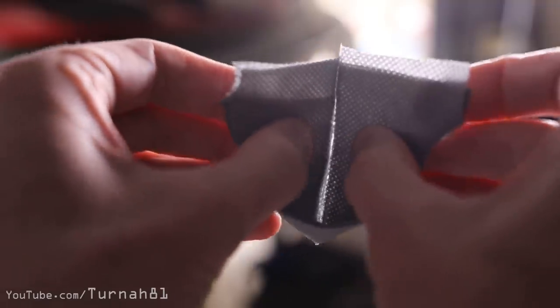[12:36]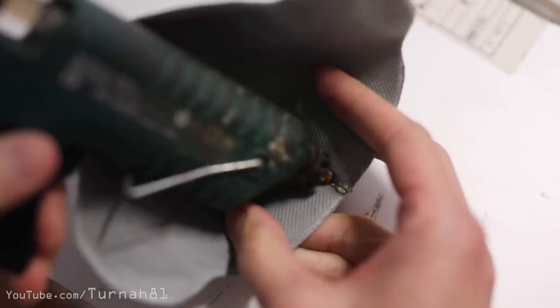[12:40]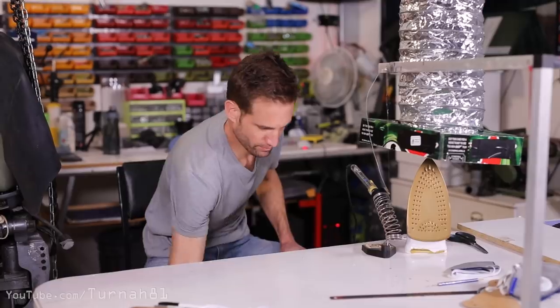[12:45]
However, you need to look out for the brighter, more obvious holes. To make this join safer, I'd say the best thing to do would be to run a bead of hot glue up the middle of the mask to make sure there's no holes and to give it a bit of extra strength. Your second option is sewing.
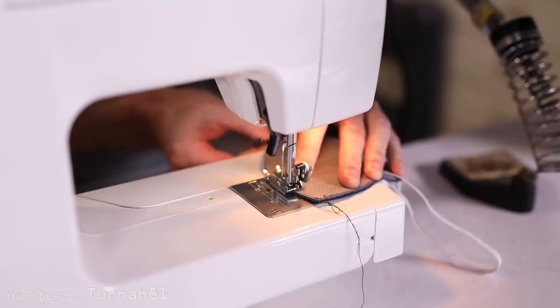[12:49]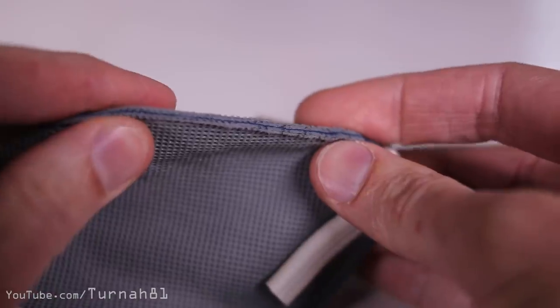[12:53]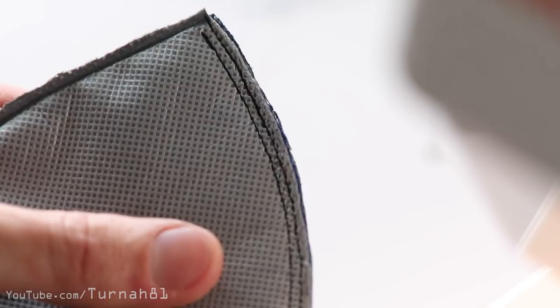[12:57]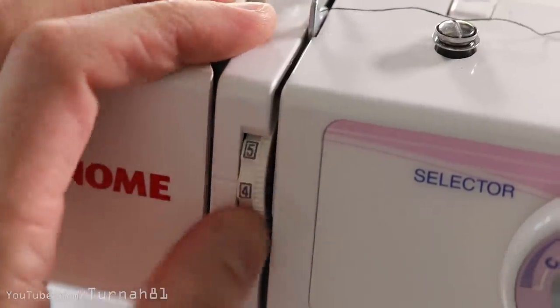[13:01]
Trying this, I'm really not confident in the seam's ability to stop air sneaking in through the edge of the layers. If you do so, you're probably better off doing a double stitch if you have time, and play around with the stitch tension to get it right.
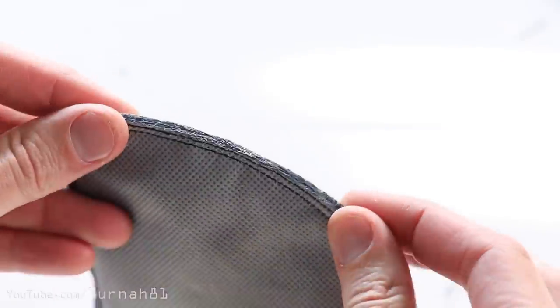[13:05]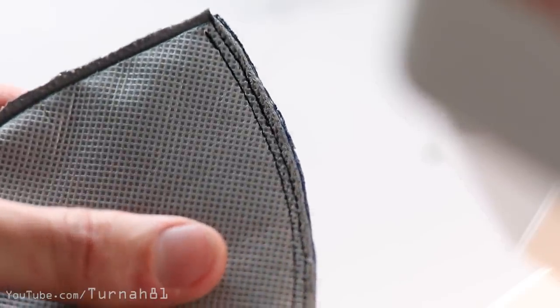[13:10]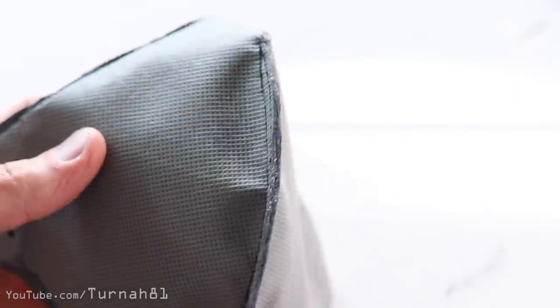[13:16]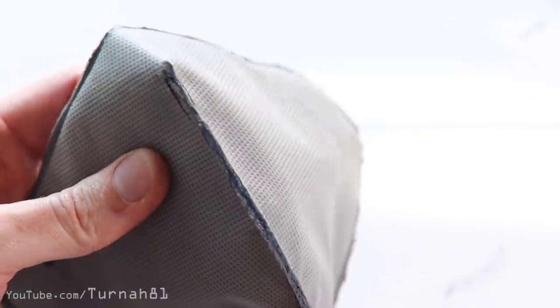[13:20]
Then the third option, which is currently my favourite because I feel like it's the safest so far. This is doing a double stitch down the front and then using the iron to melt the plastic along the front edge to seal it up. I've also since found if you wear gloves, you can pinch along the front of the seam while the plastic's still hot to get a nice good seal.
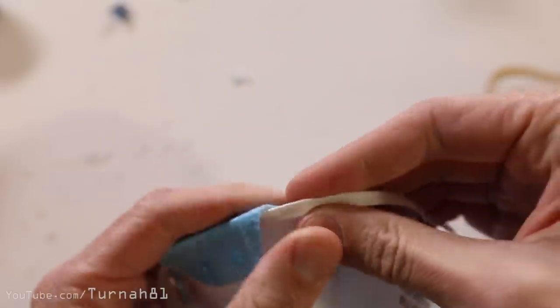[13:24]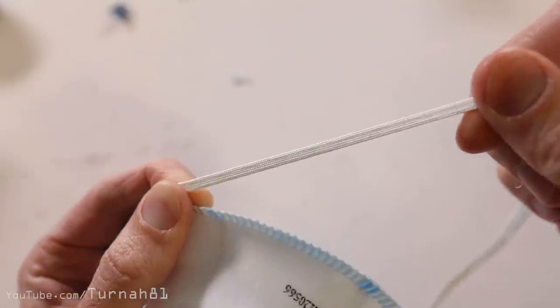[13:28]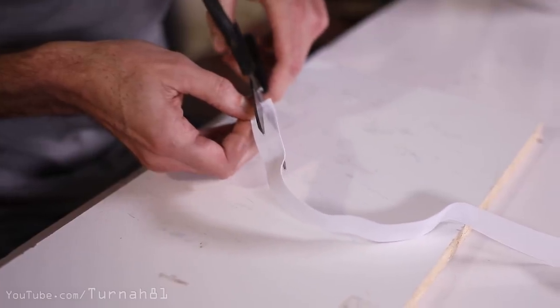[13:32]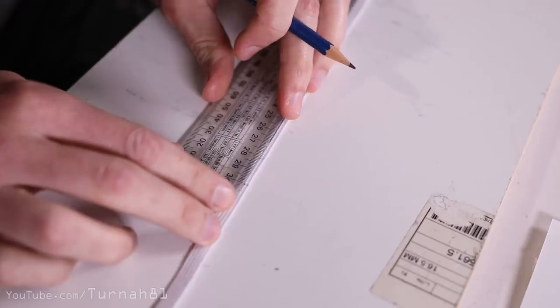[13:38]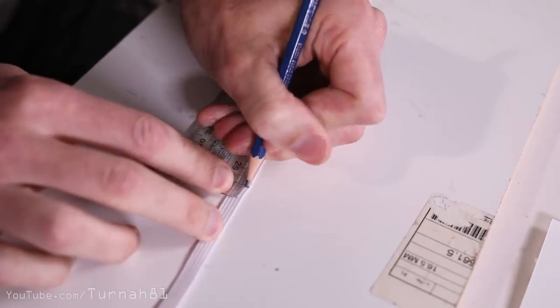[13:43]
We can now move on to the elastic straps. Similar to the N95 masks, we're going to use braided 6 millimeter elastic. If you're having trouble finding elastic, you can use wider braids, and I've found that you can actually split it down the middle and it doesn't fray later on. For this template, for an adult size, you're going to need to cut two lengths of 28 centimeters of elastic.
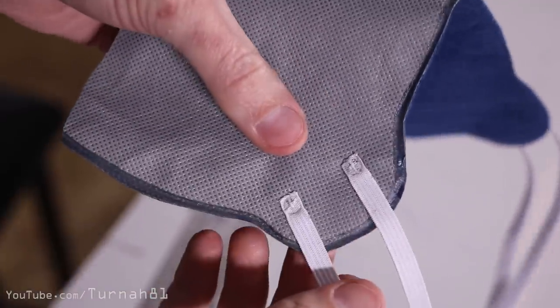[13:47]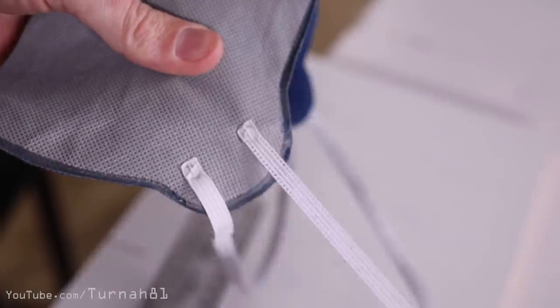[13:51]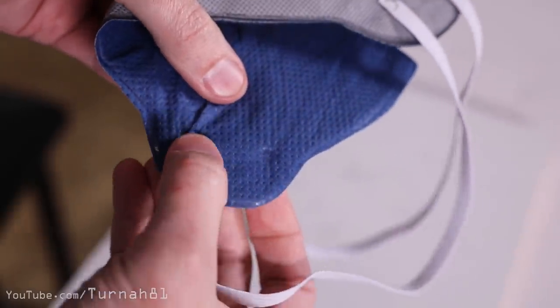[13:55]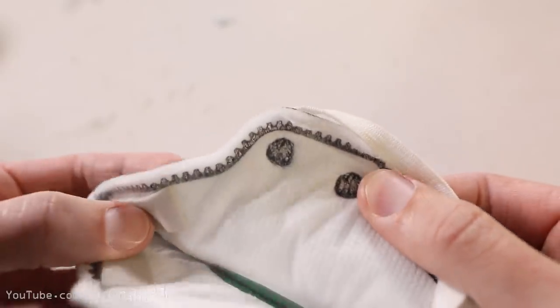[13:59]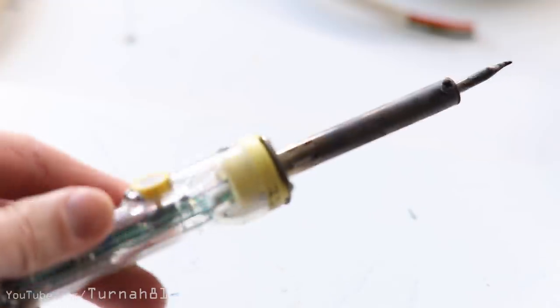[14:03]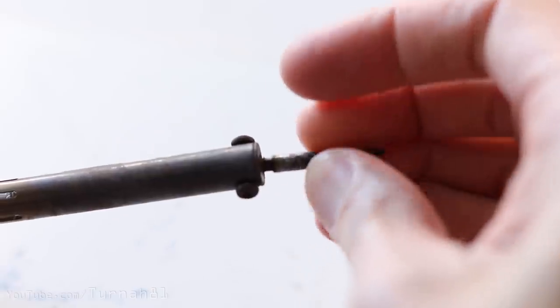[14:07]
To attach them, I'll show you the best way to do it first, which uses a soldering iron, but if you don't have one, there are alternatives I'll show you after. This method is the closest to how some N95 masks are done, which is nice and strong. With your soldering iron, you'll find that most have a removable tip. Loosen the grub screw on the side and it should fall out, or you may have to thread it out.
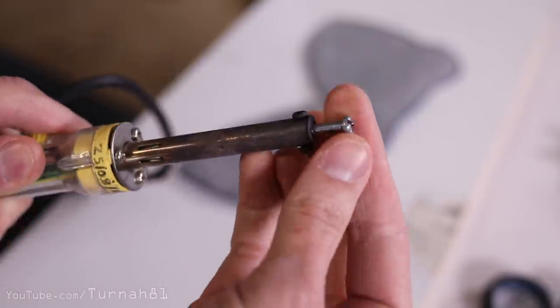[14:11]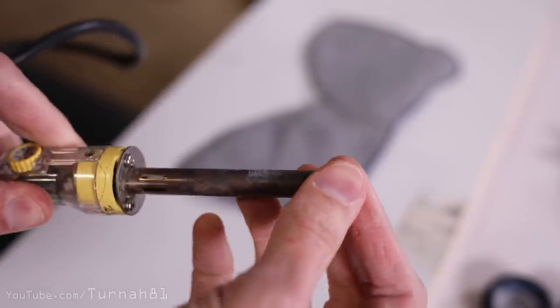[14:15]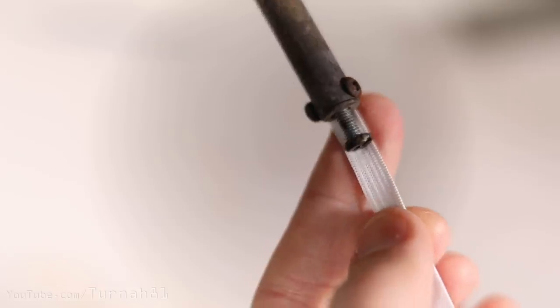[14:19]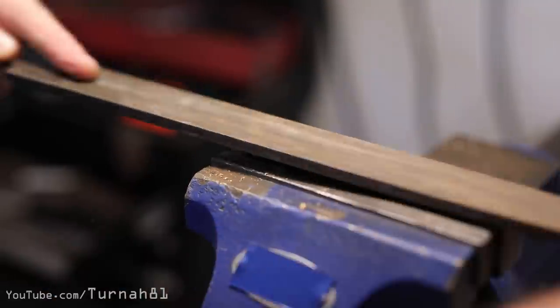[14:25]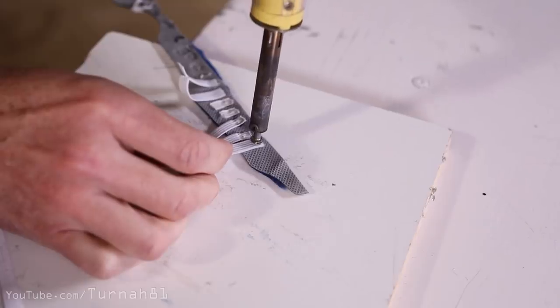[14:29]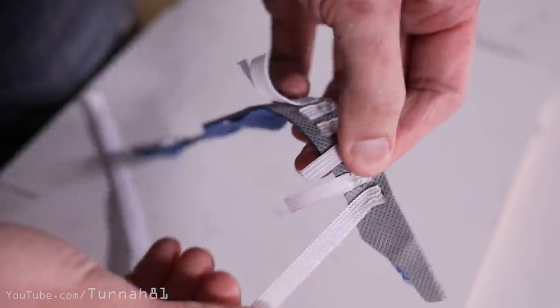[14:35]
Then you'll want to find a bolt that fits in the hole in the end. It doesn't matter what type, as long as you can get it to stay in there and that the head of the bolt isn't wider than your elastic. Before I've tightened it up, I've also put it in the vise and I've filed the head of the bolt flat. Now, like your plastic welding earlier, this is just a case of working out the right combination of heat, time and pressure, so you'll want to practice on some scrap first.
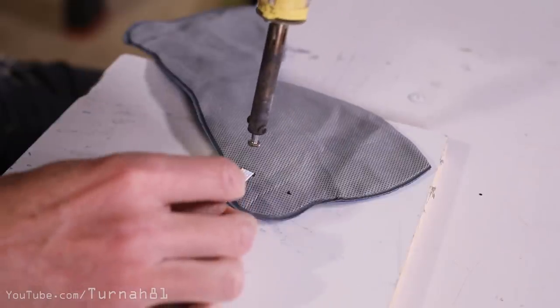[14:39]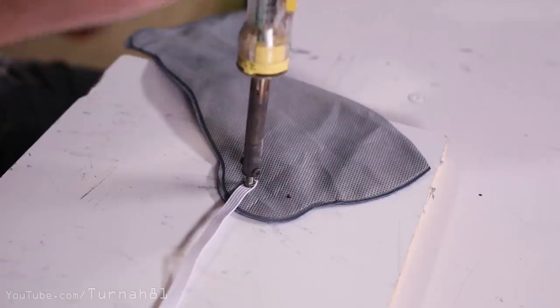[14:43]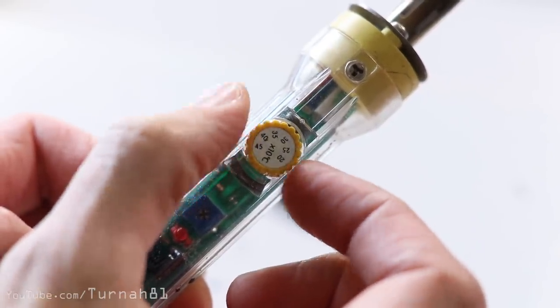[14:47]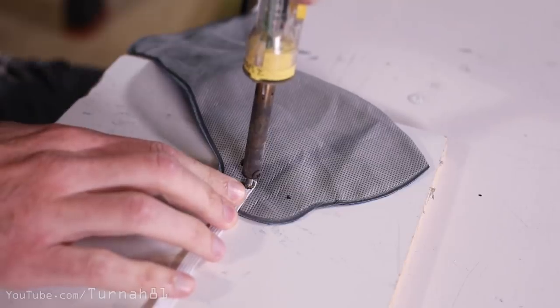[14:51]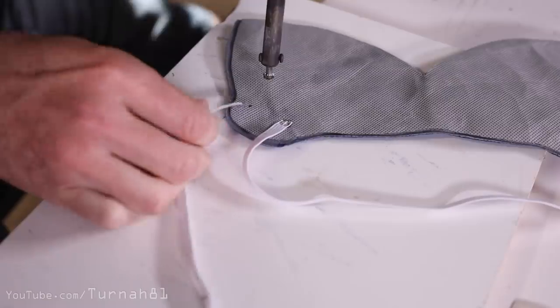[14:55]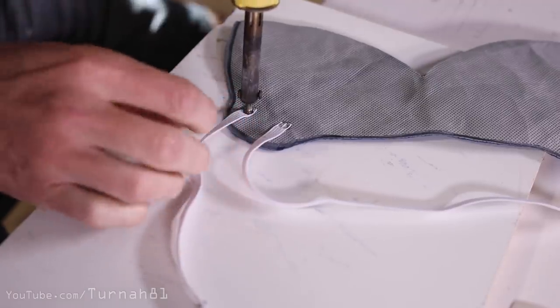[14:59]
With your soldering iron at temperature, put the end of your elastic in position and then simply press down the head of the bolt onto the elastic. With mine, the temperature can be adjusted, and I found that when it was set to 300 degrees, it was exactly 10 seconds for a good join. But this will likely vary for you, depending on what soldering iron you have, and even things like the bolt length can have an effect.
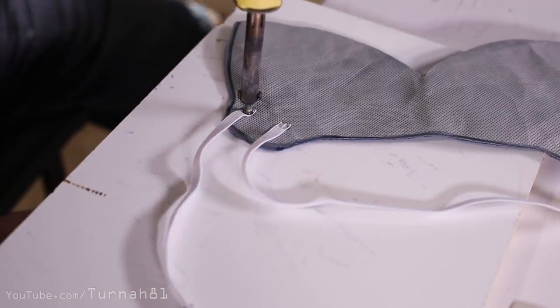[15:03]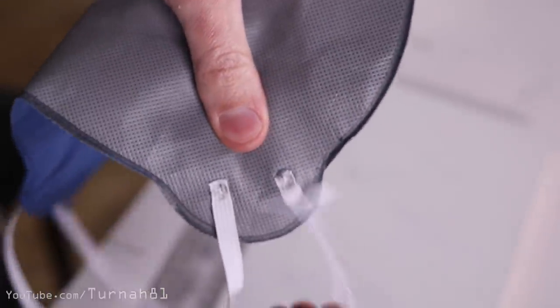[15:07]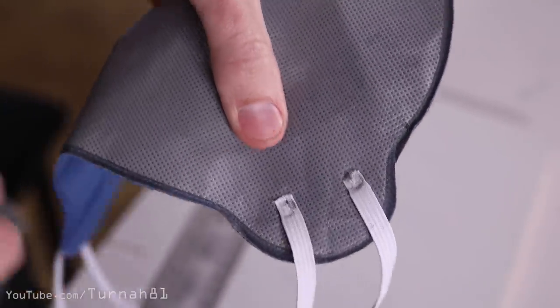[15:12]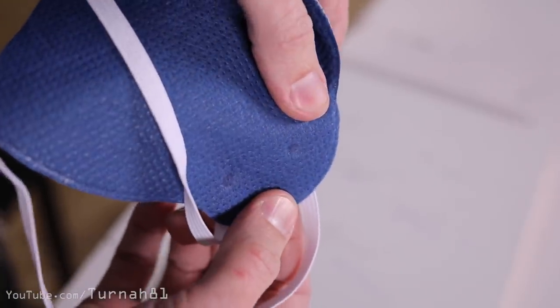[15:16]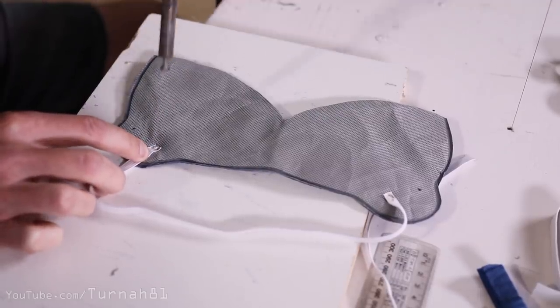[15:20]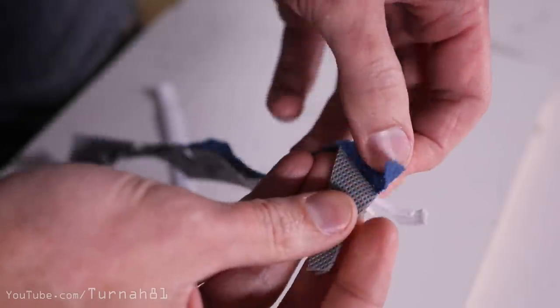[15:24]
When you've done it, to know whether you've been successful or not, look at the braid in the elastic, which is the areas between the rubber strands, and you should see it become translucent, showing the colour of your mask underneath. Plus, when you flip your mask over, you should have a shiny depression where you attached it. After you attach it, don't move the elastic around until it cools down, otherwise you'll ruin the join. Don't touch it! This method is great because it bonds through all the layers for strength.
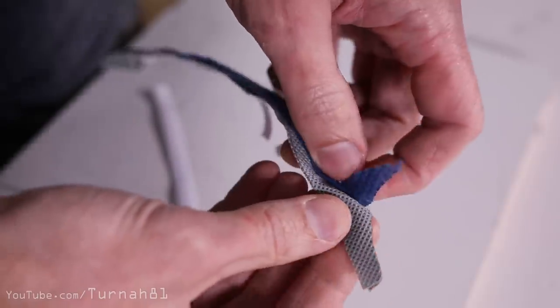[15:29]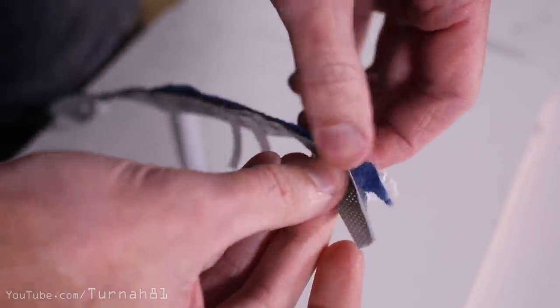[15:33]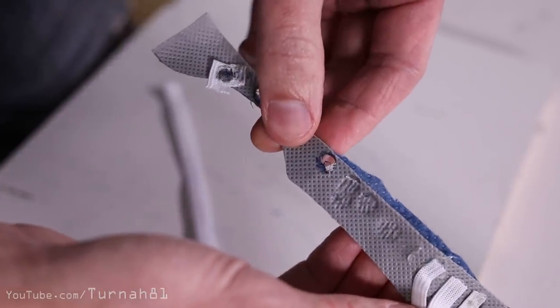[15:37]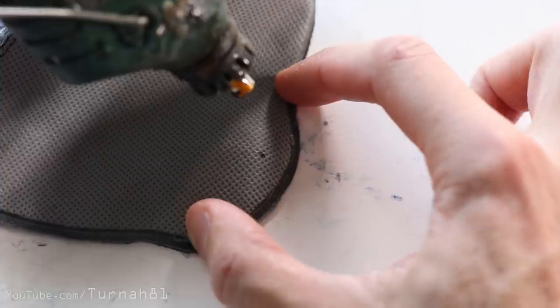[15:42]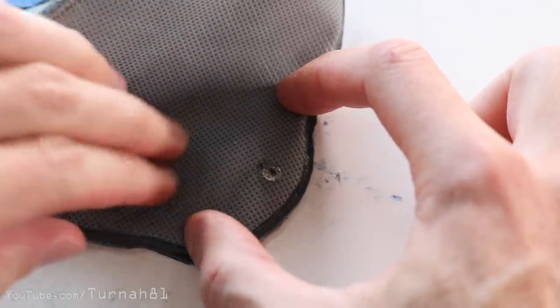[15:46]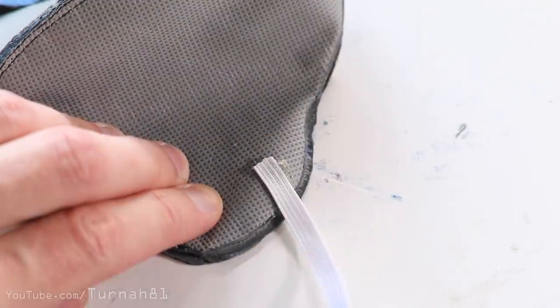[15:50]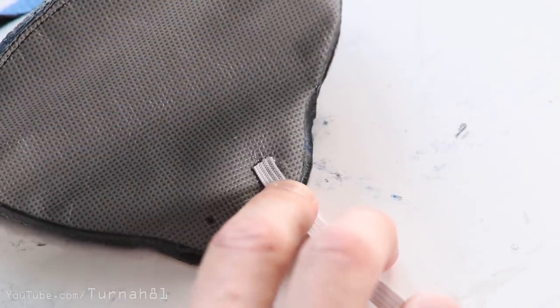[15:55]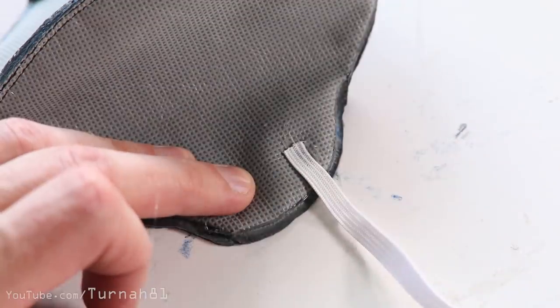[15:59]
If it doesn't join, I've also found that you can have a second and third attempt without ruining it. Just don't let the tip of the soldering iron touch your mask material directly, because this has a much lower melting point and will create a hole pretty quickly. Okay, now for option number two. You can simply use hot glue. It works okay, but it doesn't stick to the elastic as well as the weld holds it. Plus, it only bonds to the top layer of your mask, so it's probably not going to last as long.
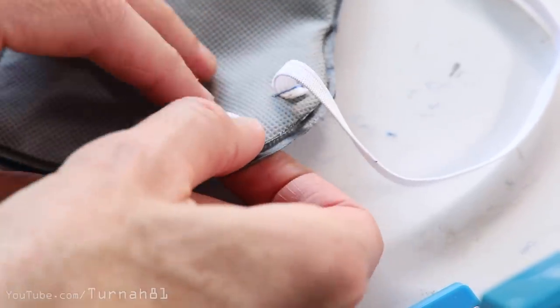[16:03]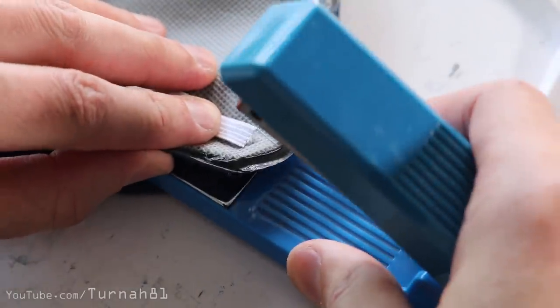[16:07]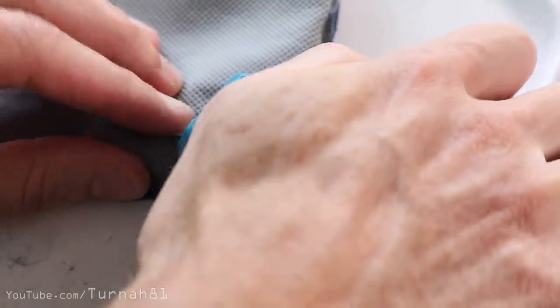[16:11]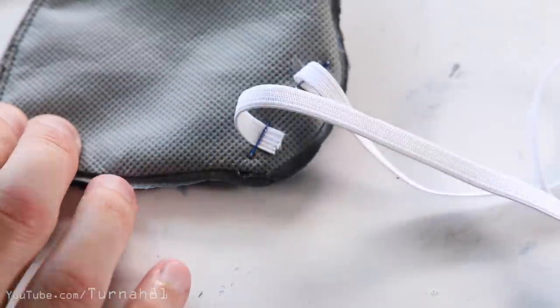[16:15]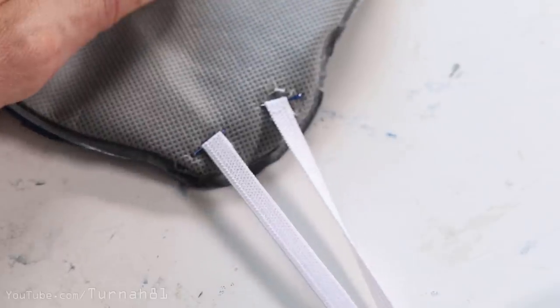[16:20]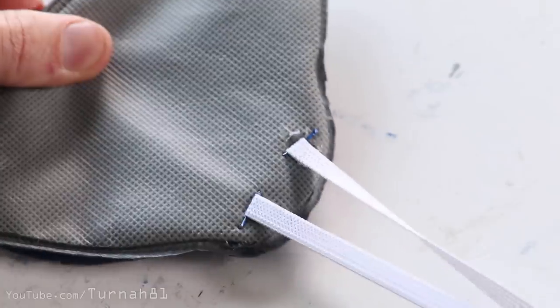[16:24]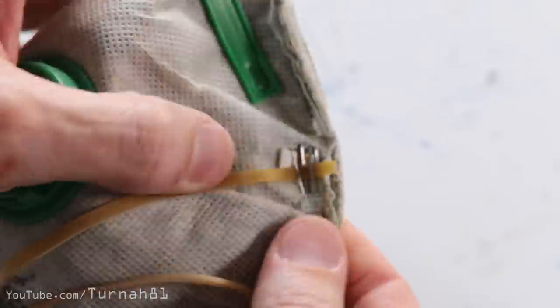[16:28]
Then the third option is using a stapler. To do this, for strength, lead the elastic in from the opposite direction to where it will be pulled from, then put your staple through. I'm not a big fan because I think it could introduce air leaks. Also, like one of my shop-bought N95 masks, it seems to fail a lot and need to be reattached. However, stapling it allows you to use rubber bands if you can't source braided elastic.
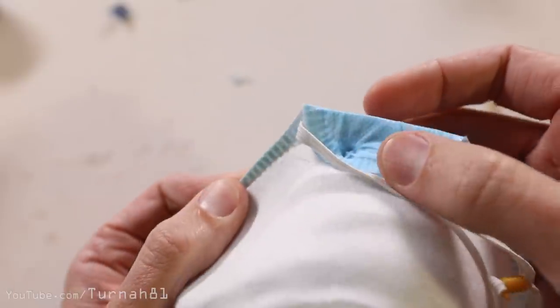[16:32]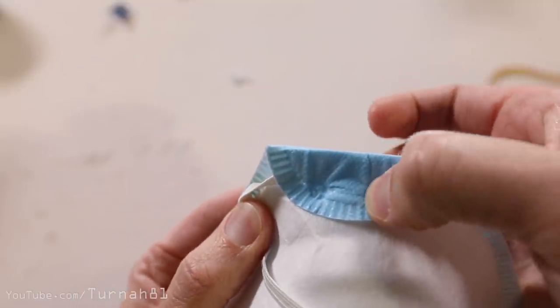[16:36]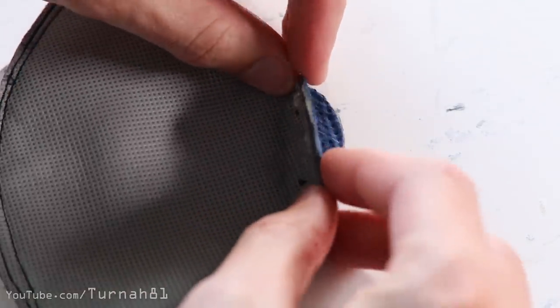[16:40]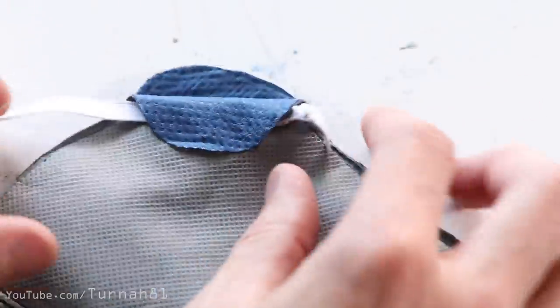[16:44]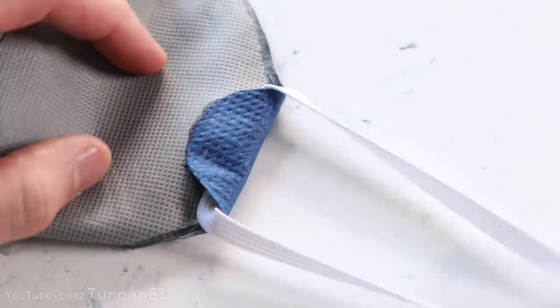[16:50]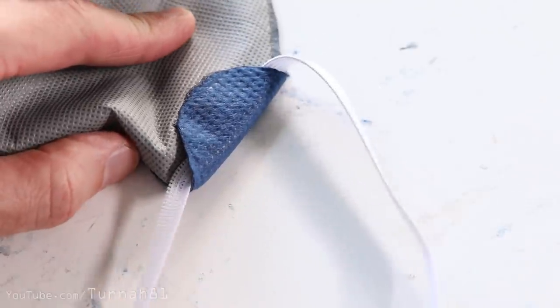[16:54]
There is one more option, as done on some N95 masks, and we've allowed for this in a template. This involves folding the edge of the mask over and onto itself, and then tacking it in place with hot glue. Then you can simply run the elastic through the loops that you've created. Doing it in this way can also allow the elastic to be more easily adjusted or replaced.
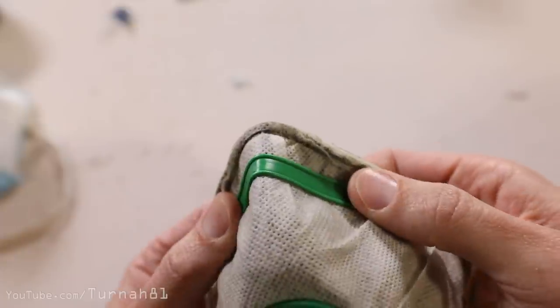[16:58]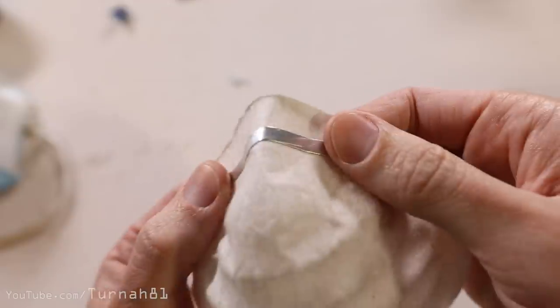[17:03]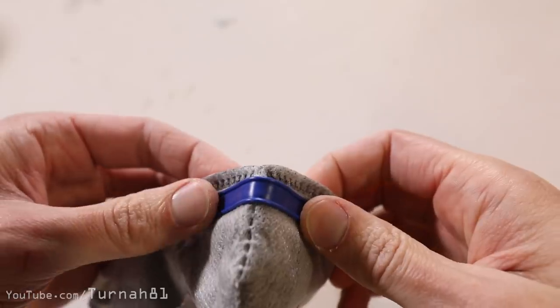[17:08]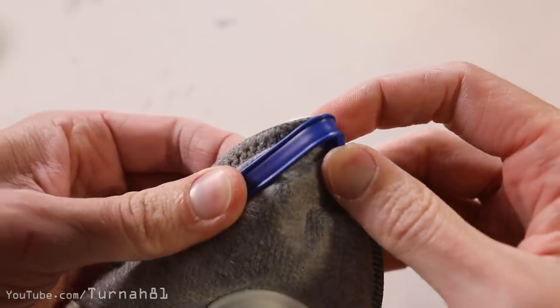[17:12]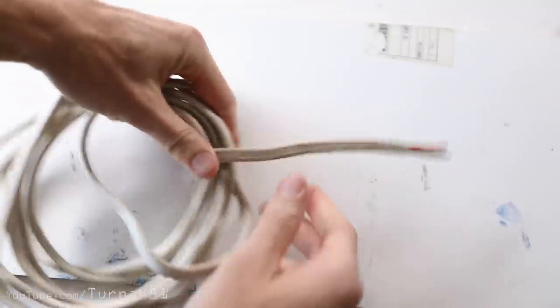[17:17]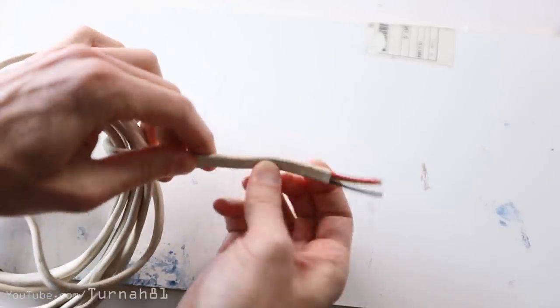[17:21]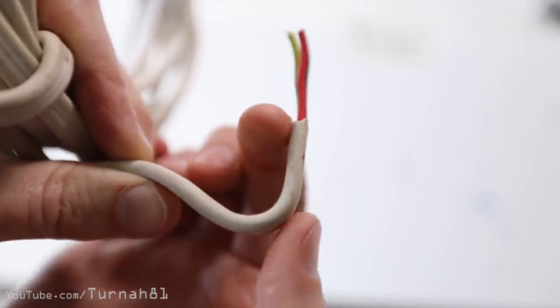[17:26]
Now we can do the last part of the process, which is the nose adjustment wire. Wire, or any kind of metal strip, can be difficult to integrate into a mask without the use of a hem. So, hunting around the shed, trying to think of ways to replicate existing N95 nose adjustments, the idea jumped out at me to use flat electrical cable, like you'd find in the roof of your house, and it works a treat. Cables like this have fairly solid wire cores, bending easily and then holding their shape. Flat electrical cable like this is a couple of dollars per meter at hardware stores.
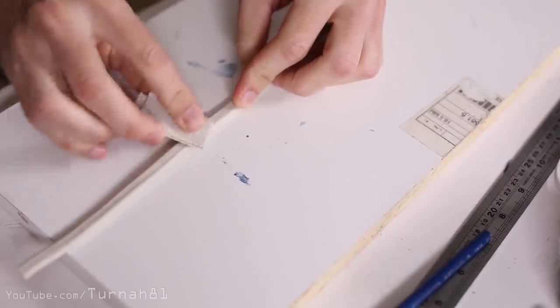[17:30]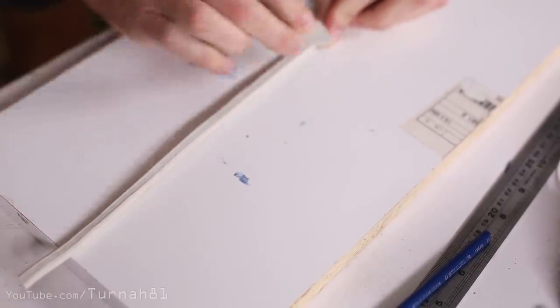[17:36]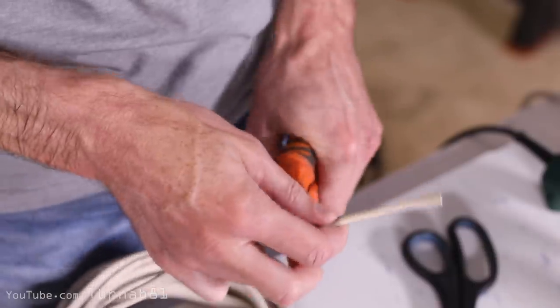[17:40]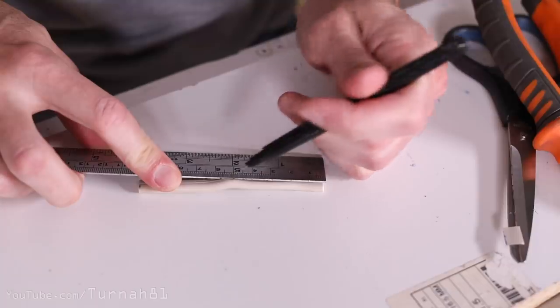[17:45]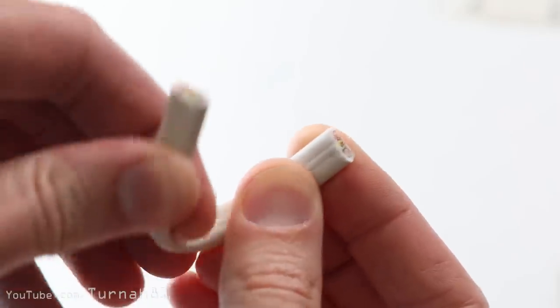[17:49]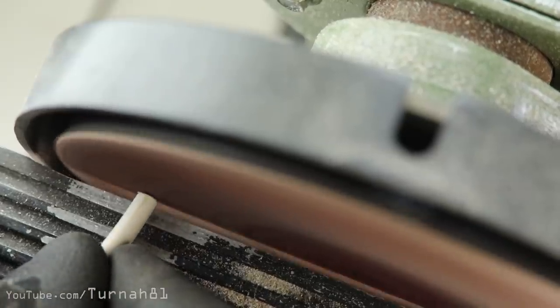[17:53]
Then with some rough sandpaper, give one side of the cable a bit of a sand to roughen it up. This will make the glue stick much better. Cut it into pieces, about 9 centimeters long each. Give it a good clean so it doesn't look dodgy. Then, if you want to be fancy, you can pre-bend it into shape, which can reveal some of the rough strands of wire in the end, which you can then sand or file.
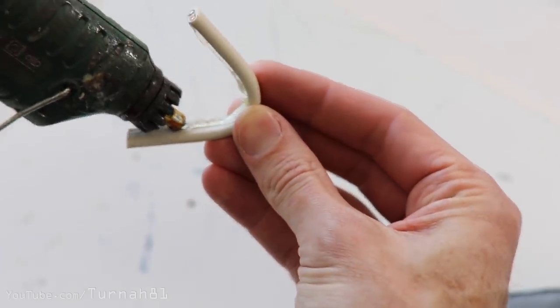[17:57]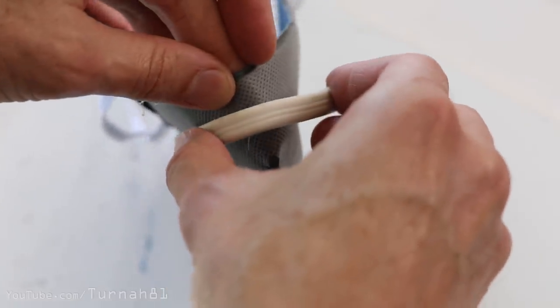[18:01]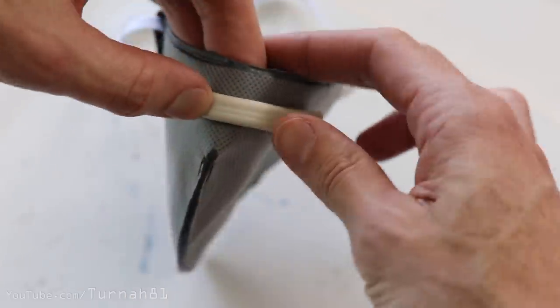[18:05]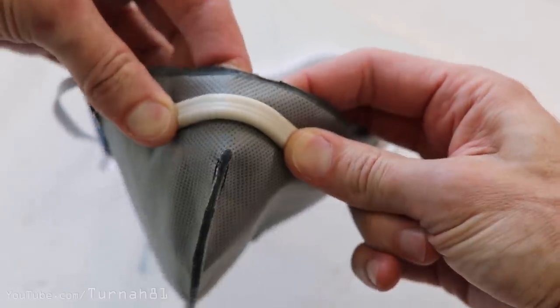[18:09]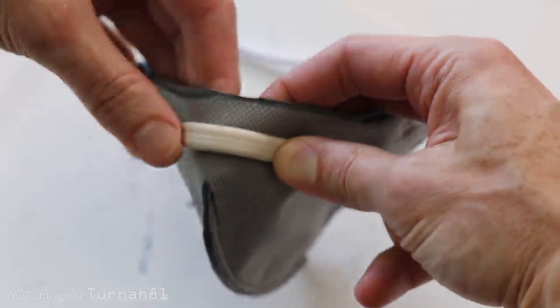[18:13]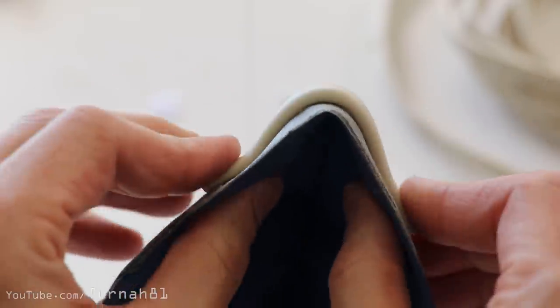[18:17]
Now, with the hot glue gun, run a bead of glue along the rough side of the cable, then stick it across the nose section of your mask. When you do it though, try not to put the middle of the wire too close to the edge of the mask, because this could interfere with wearing safety glasses, if that is a factor. Make sure you hold it in place while it cools down. Once it's set, you can then pre-bend it into a slight bell shape.
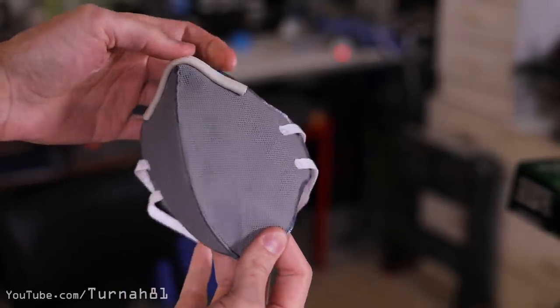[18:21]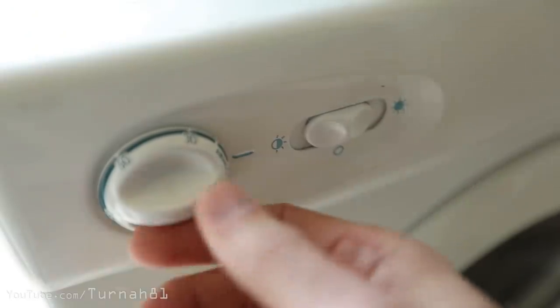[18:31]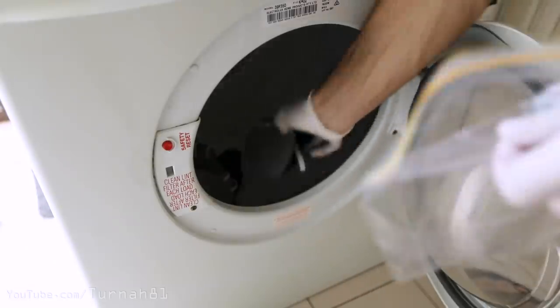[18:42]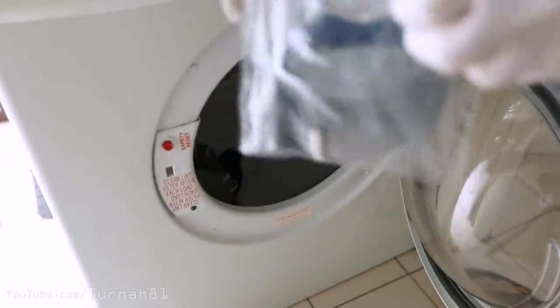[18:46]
With that attached, just have a quick look over the mask, checking for any flaws. Then, depending on how it's going to be used, you should disinfect it. I also found it handy to throw the masks in the dryer with the heat turned completely off for about 15 minutes. This helps aerate the masks of any plasticky smells and also removes any loose material that it may have picked up while making it. After this, remove them from the dryer with gloves. You can then put them into individual snap lock bags to keep them clean.
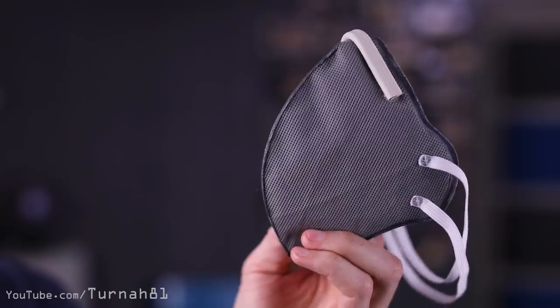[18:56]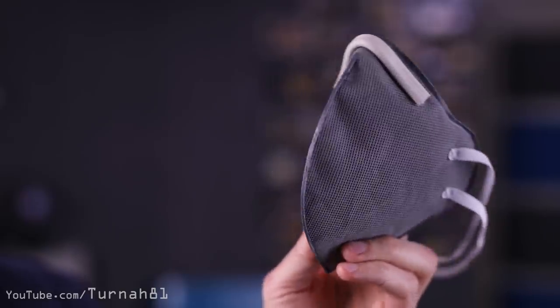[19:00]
Overall, I'm pretty happy with how these masks turned out. As far as the mask performance goes, yes, I understand that you have to be clean shaven, but we found that the fitment and feel was exactly the same as a flat fold with no leaks around the edges. It works perfectly for dust around the shed.
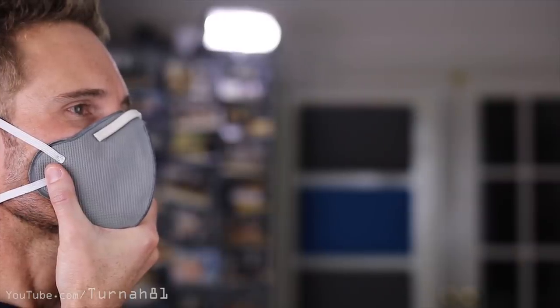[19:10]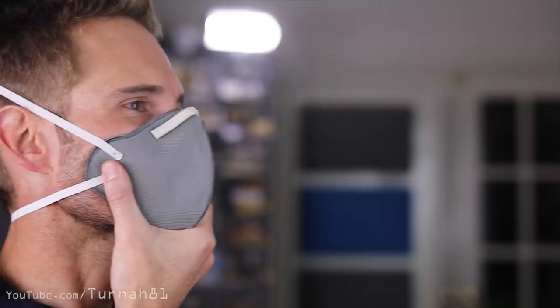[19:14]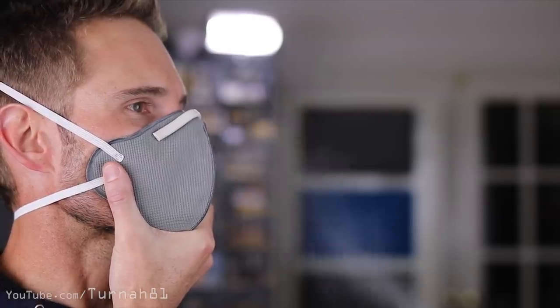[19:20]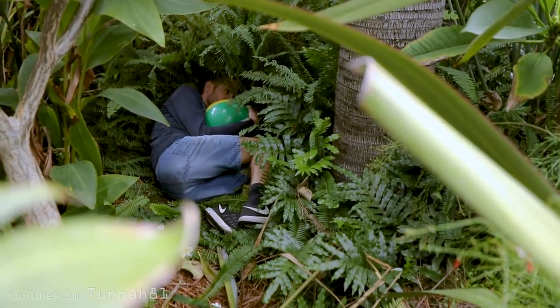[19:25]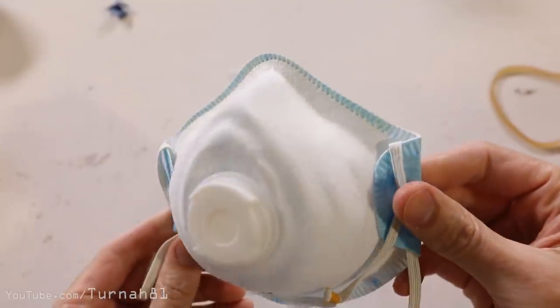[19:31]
Otherwise, as far as filtration goes, I unfortunately don't have the equipment to test it properly, but we did unscientifically try it out with a few different aerosols. Equally, both the flat fold N95 and homemade mask noticeably filtered out a good amount of the product, leaving just a gaseous smell, and then you wake up in your neighbour's garden 2 days later, spooning a beach ball. What was interesting though, is it actually outperformed the rigid N95 mask that I had, because it turns out the fitment just wasn't as good.
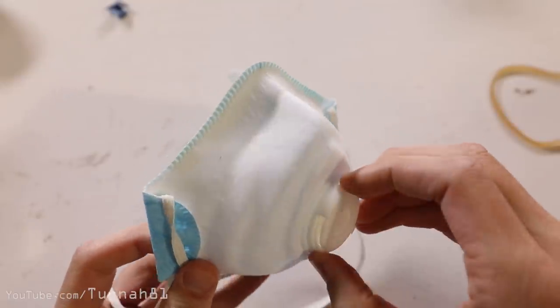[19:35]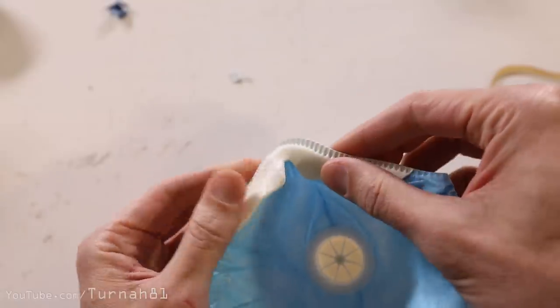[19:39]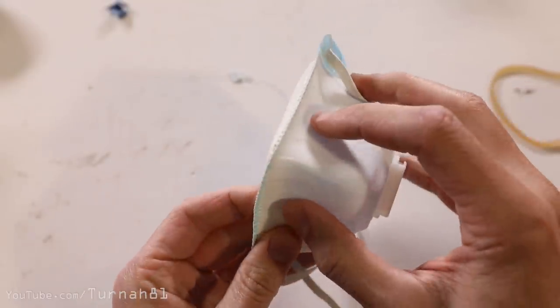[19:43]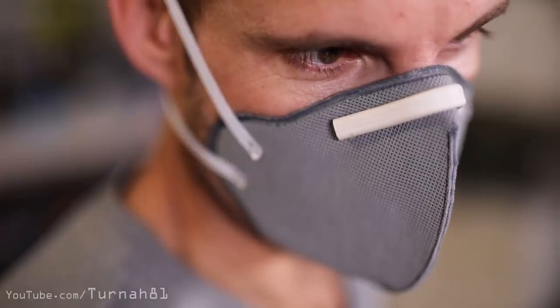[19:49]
This mask doesn't have the nose wire and appears to rely on additional foam, which I guess isn't the best choice. But that brings me to the most important point. There's no point wearing an N95 or P2 mask unless you fit it and handle it properly. Make sure there's no air gaps around the edges. And always remember,
Once you're wearing it, you have to treat the front of your mask like your asshole. Never touch it, especially in public. If you do accidentally touch it, wash your hands immediately with soap and water without touching anything else prior, and don't let strangers stick their nose in it.
I hope everyone is safe and doing well. Chris and I are doing okay. We are currently self-isolating and doing the homeschooling thing with the kids. Like many people though, we're basically unemployed now with all our scheduled work for the year getting cancelled. But I guess the good news is we now have more time for YouTube videos. But you know, we'll see what happens.
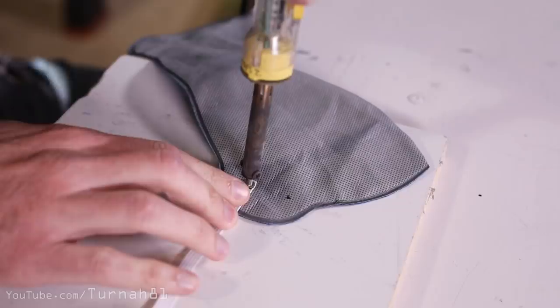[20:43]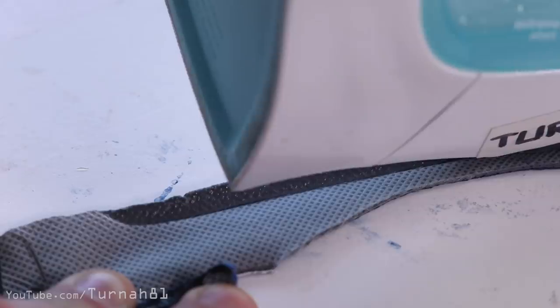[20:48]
Hey, look at that. Huh? High visibility. Where is he? He's right here, you can tell, because it's fluorescent orange. No losing me in a hospital. Or I can serve as a road cone.